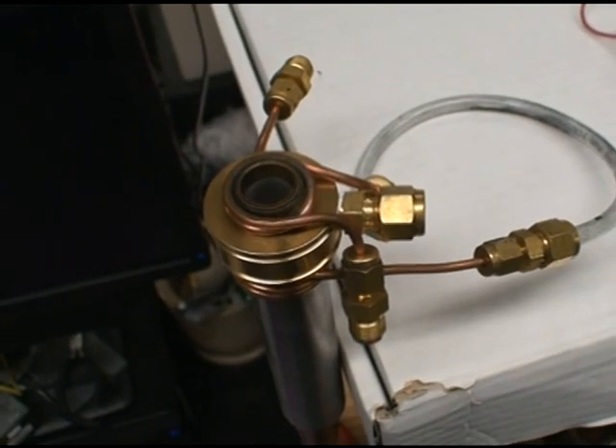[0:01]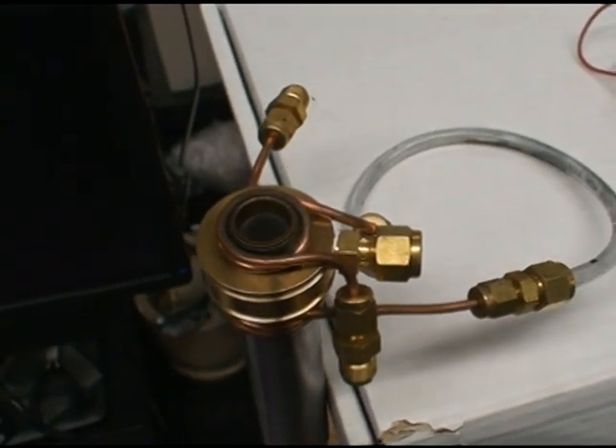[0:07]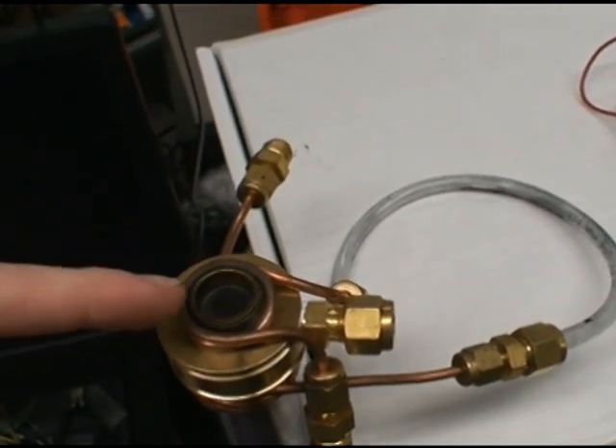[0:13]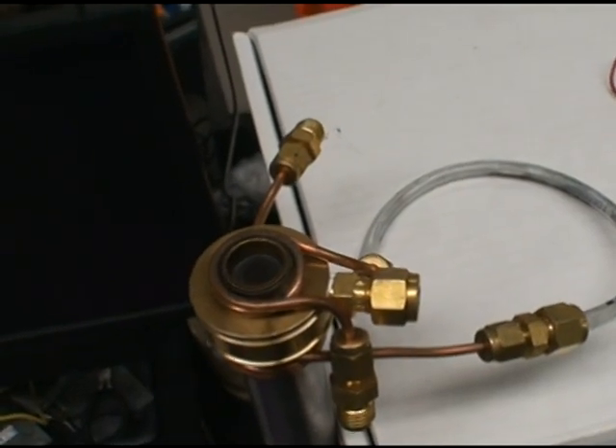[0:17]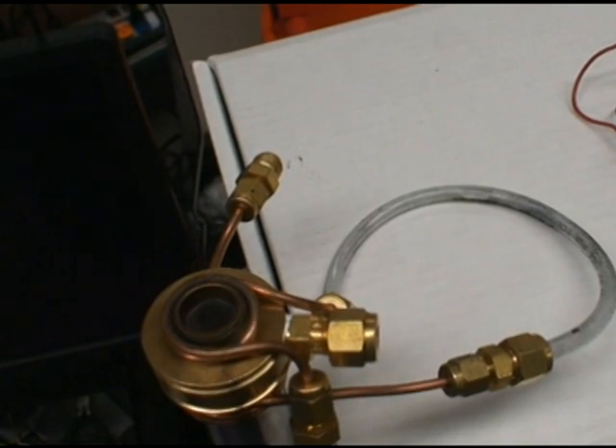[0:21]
Hello everyone. This video is going to discuss how to create an annular pilot, or a ring pilot. The reason you want to do this is to ensure that your central flow does not blow off. Some type of Bunsen burners all contain, or have generally, a ring pilot that is fueled by the main flow line.
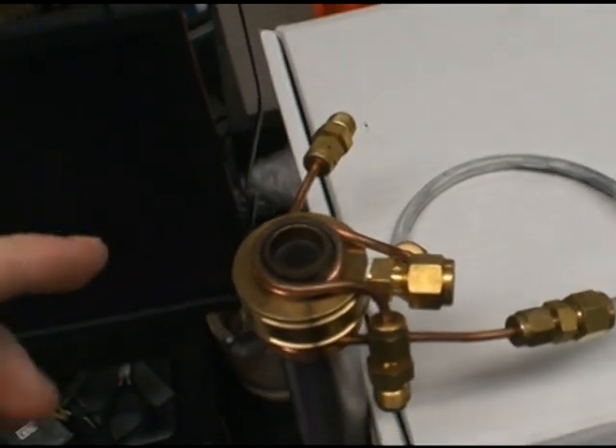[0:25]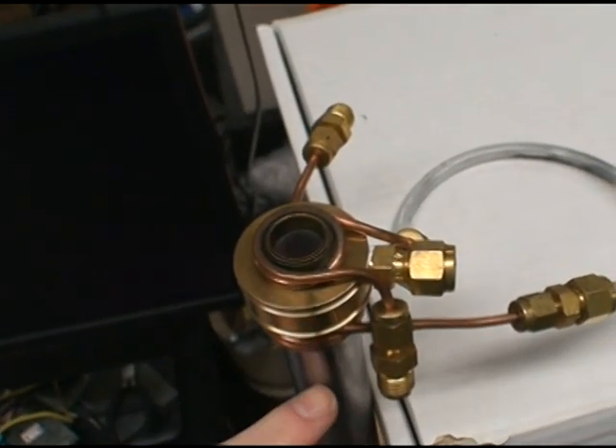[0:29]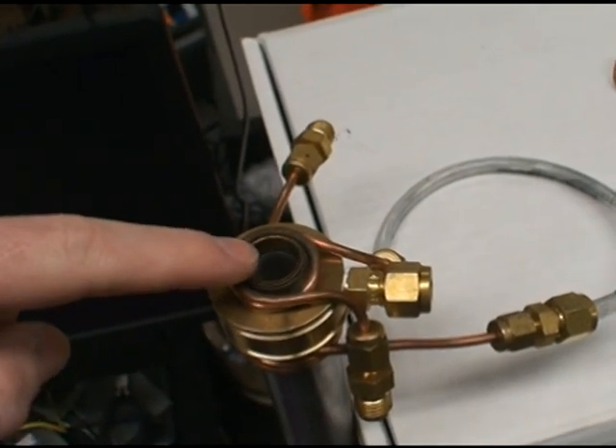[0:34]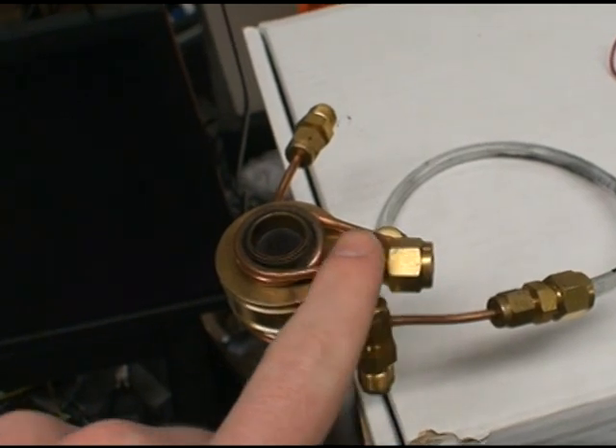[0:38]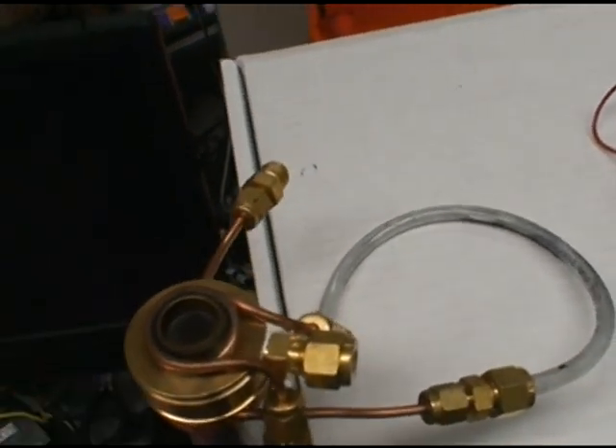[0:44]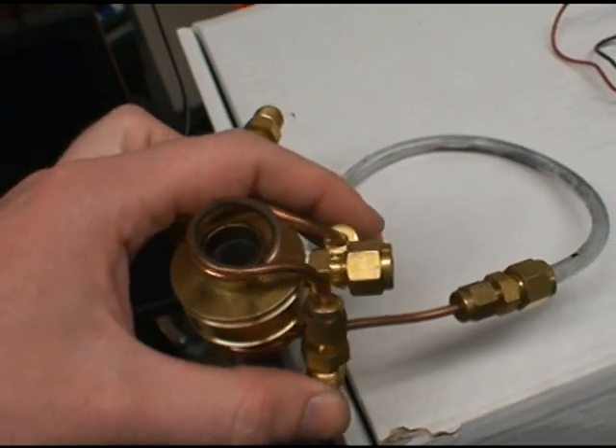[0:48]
But this burner has an annular pilot that is separately fueled from the central line, so you can precisely control the central line burner here and then put in a separate stream of gas here to generate an annular pilot. In this annular pilot, we're actually using a mixture of methane and oxygen, and you can use other things as well. What we have is this is just water cooling.
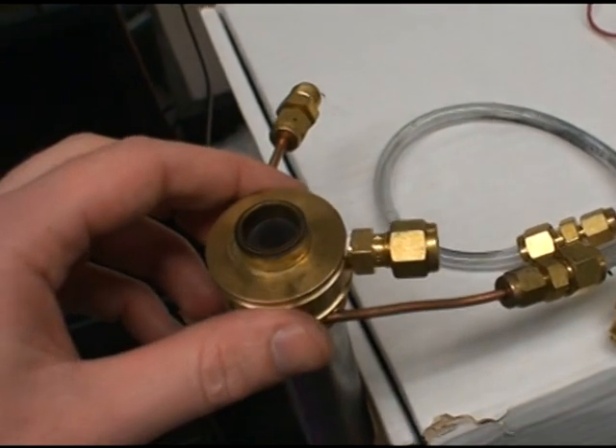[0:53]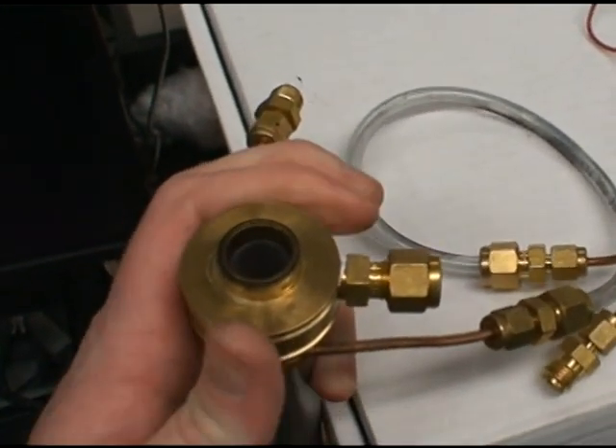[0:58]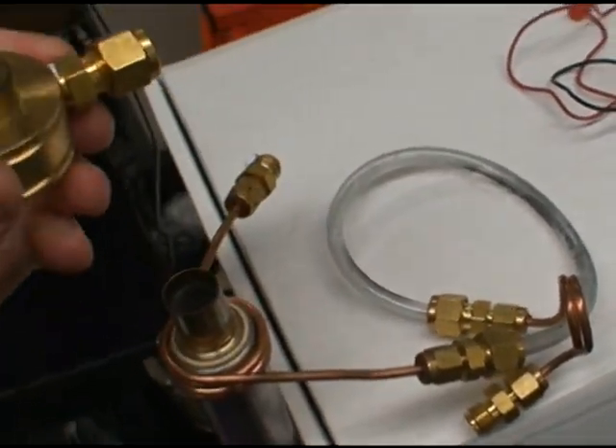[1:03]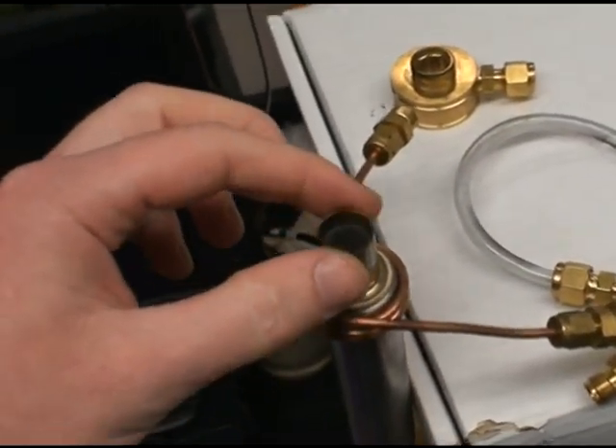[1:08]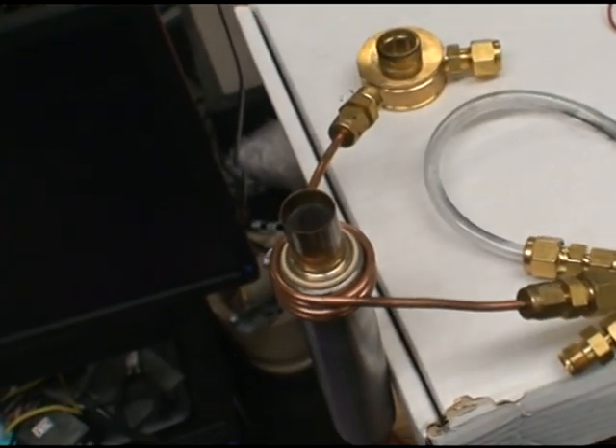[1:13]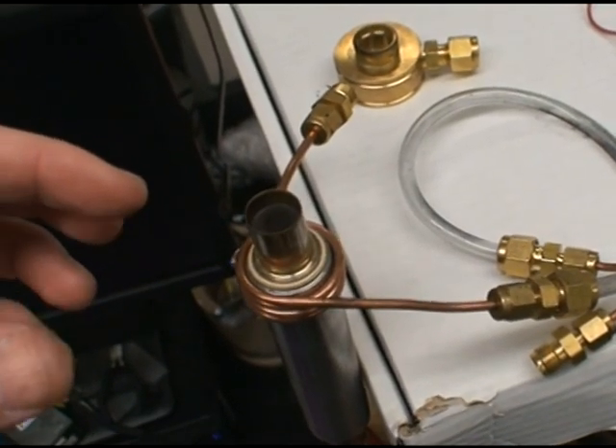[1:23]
Let's see if I can remove that real quick. So we have this insert, or this cap, that comes off. I should have loosened it before I started the video. If we didn't have an annular pilot, we'd have this burner, just a straight tube, which is fine for laminar flames and slightly turbulent flames. But if you want to do high flow rates or high turbulent intensity flames, you need a pilot to anchor the flame on the burner nozzle itself, otherwise the flame will blow off.
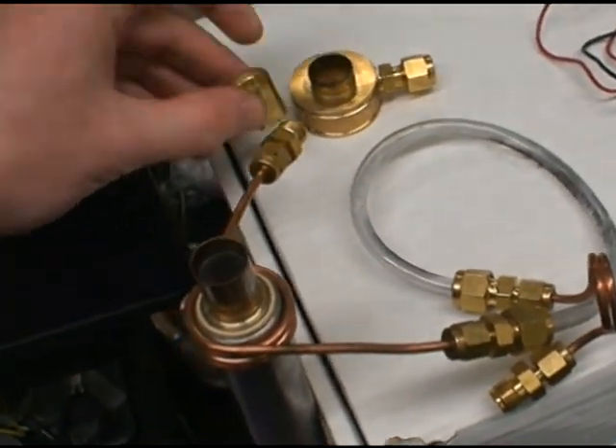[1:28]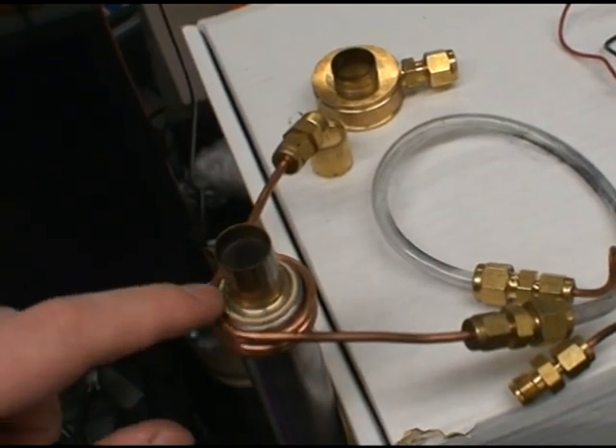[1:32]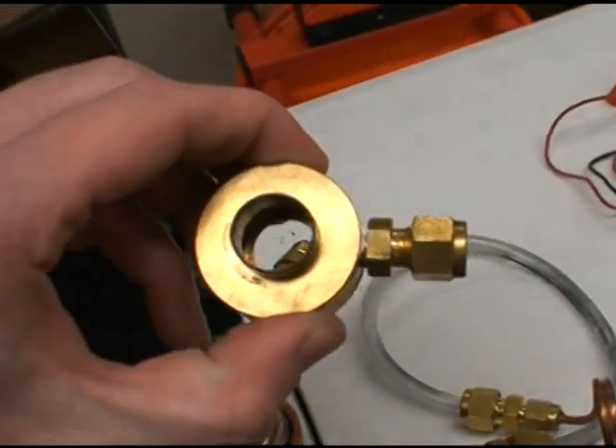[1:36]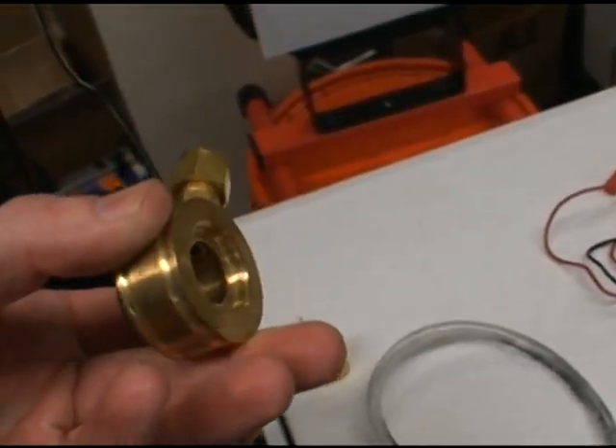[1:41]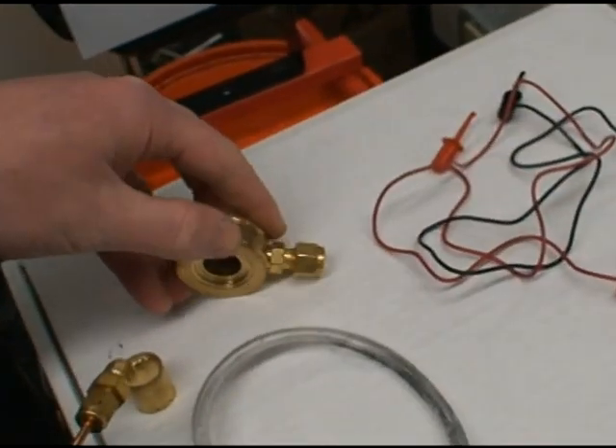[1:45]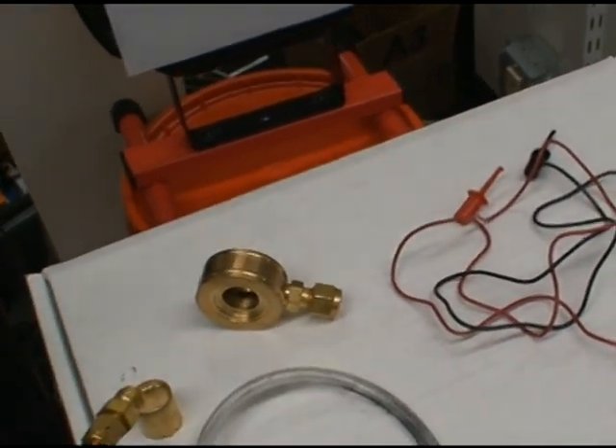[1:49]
So the pilot consists of a number of pieces. We have our main burner, we have a gasket to prevent leakage out the bottom. We have this where we feed the gas. In here there is a slot. I hold this down, it's hard to hold the camera and talk about this at the same time. Wish I had a pointer. I have a pencil, that'll do.
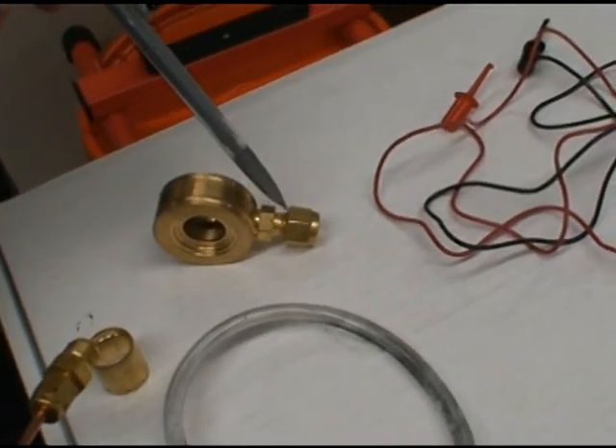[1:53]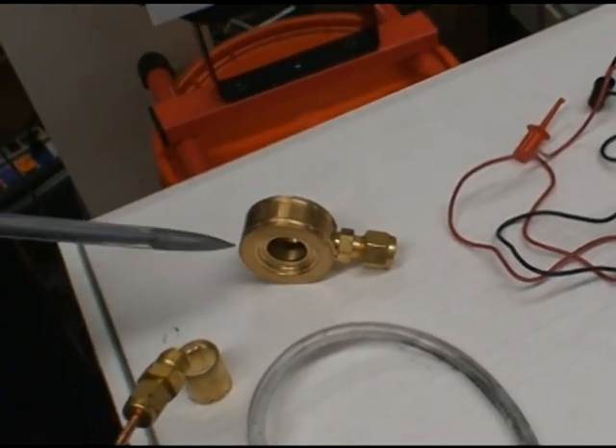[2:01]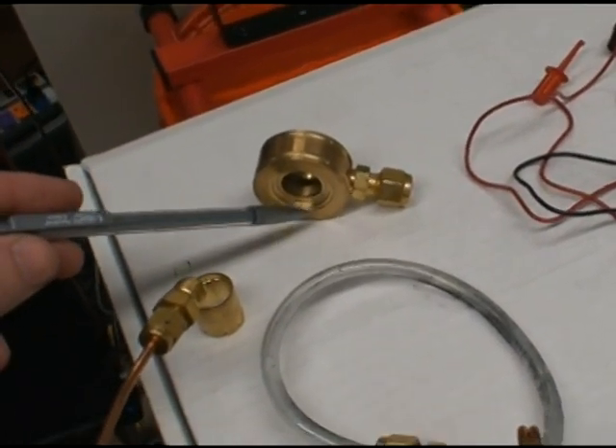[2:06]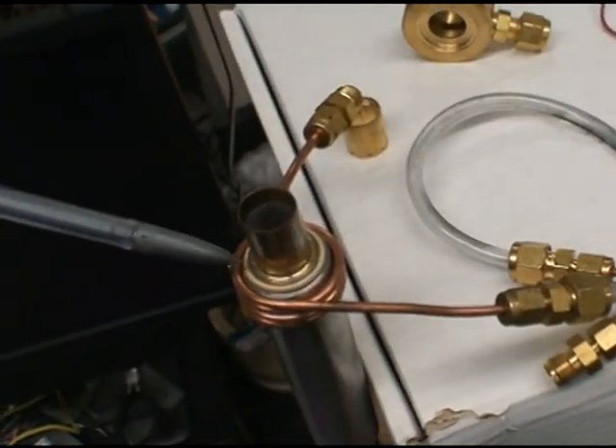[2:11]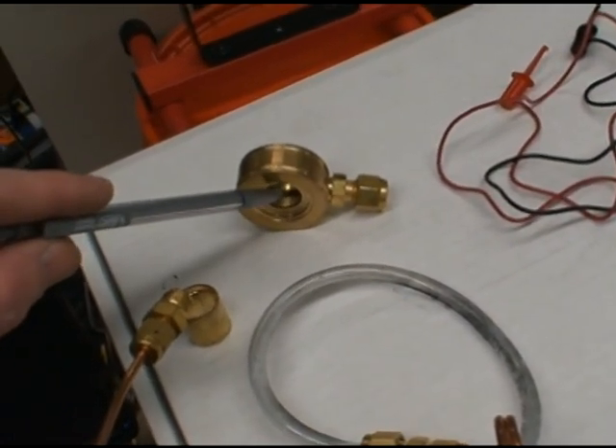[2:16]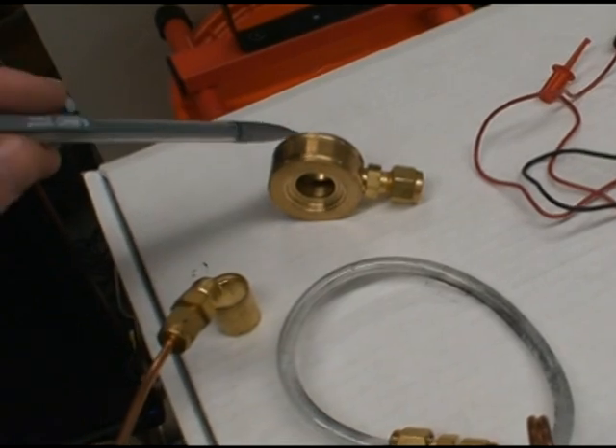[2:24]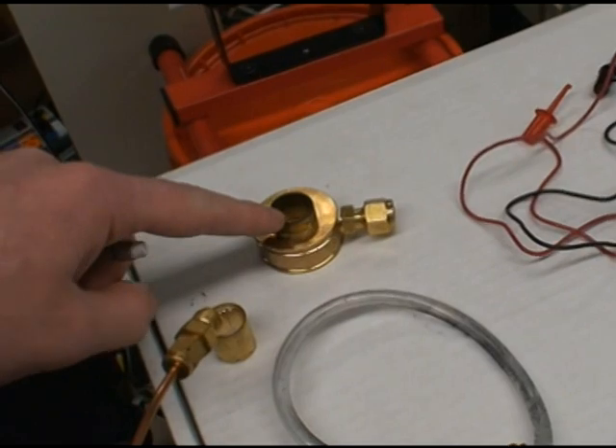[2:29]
So here we have a Swagelok fitting where we input the gas mixture. It's already pre-mixed when we put it in. In this case, you might find it safer to input the mixture not pre-mixed, but here we're going to do it pre-mixed. This is just machined out to fit on the burner and the gasket. And then we have a ring machined out around the circumference so that the gas can distribute evenly around the diameter before it exits at the burner nozzle.
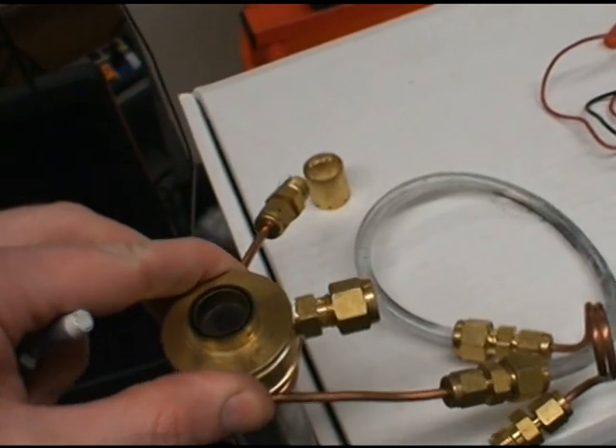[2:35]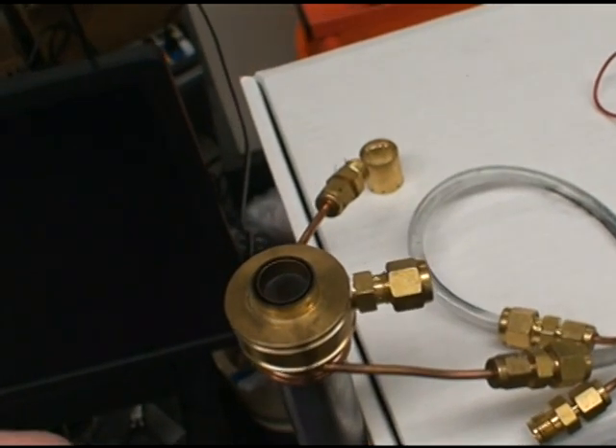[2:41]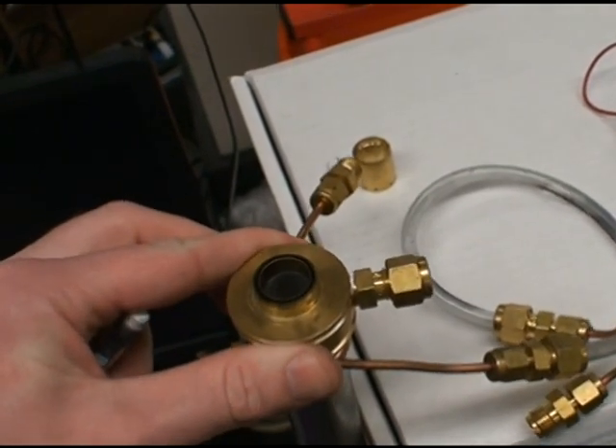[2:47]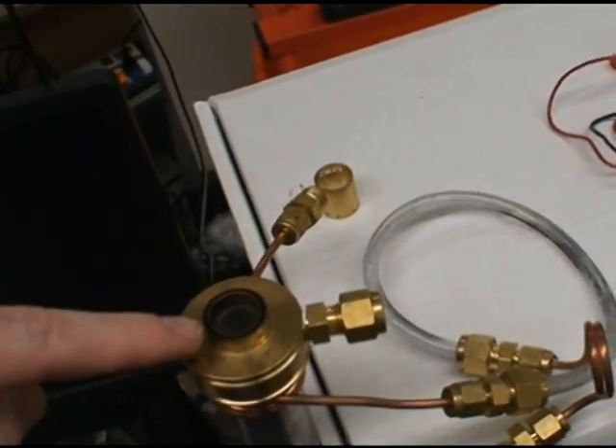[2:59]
Now, you can put this on here just like this and have a relatively stable pilot as long as your turbulent intensity isn't too high. There is some issue with making sure this is actually on square, since it's not a machine-fitted carbon gasket or something like that at the bottom. It's a rubber gasket. There is some tendency for this to get a little crooked, and then you won't have a uniform flame. But you can get a very nice premixed or diffusion flame either way along this ring. And this ring, as it sits here, is 10% of the area. The total area of the pilot is 10% of the total area of the burner.
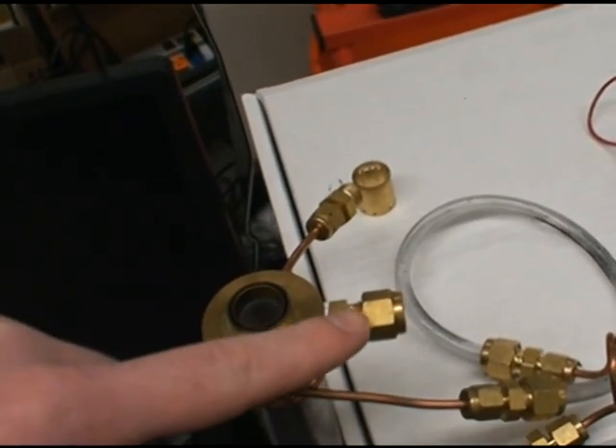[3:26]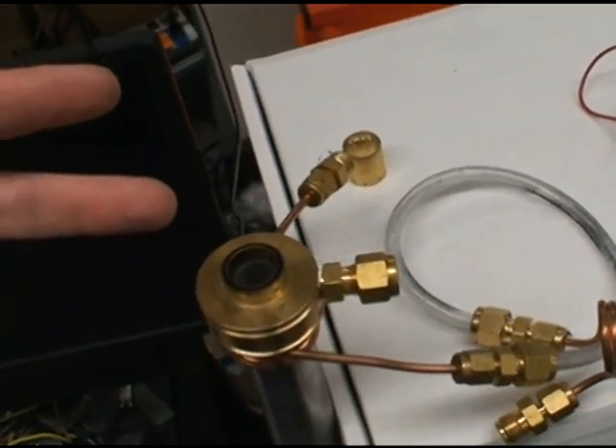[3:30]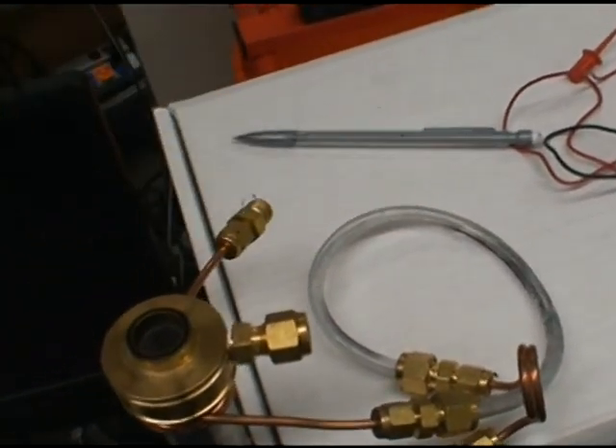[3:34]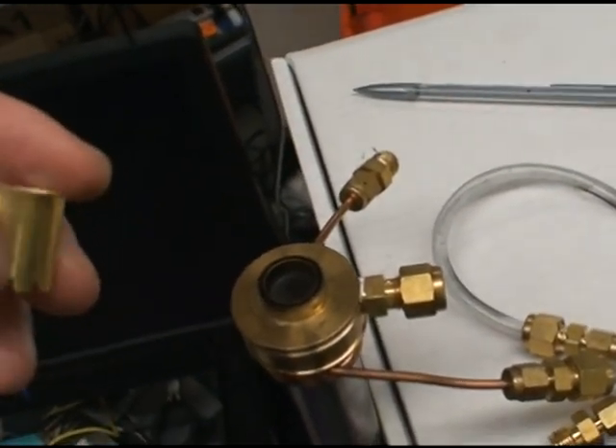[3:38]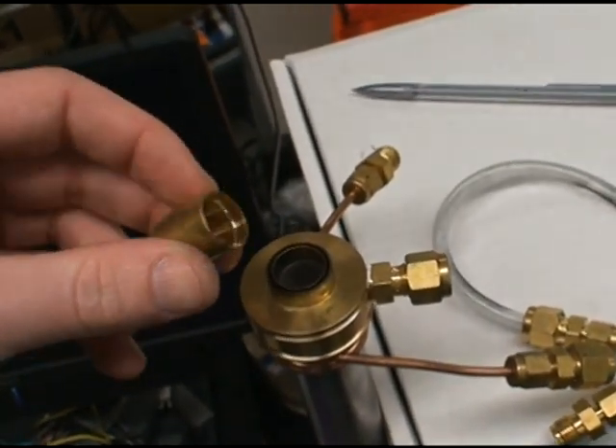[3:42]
Now, when you have high turbulent intensities, this type of pilot will be blown off. This type of pilot here would use a methane and air mixture. So what we wanted to do was make a stronger pilot, so we went to a methane and oxygen mixture. You can read in literature that some people use hydrogen or acetylene or something that burns very quickly, but I'm afraid of using hydrogen, so I'm not using it.
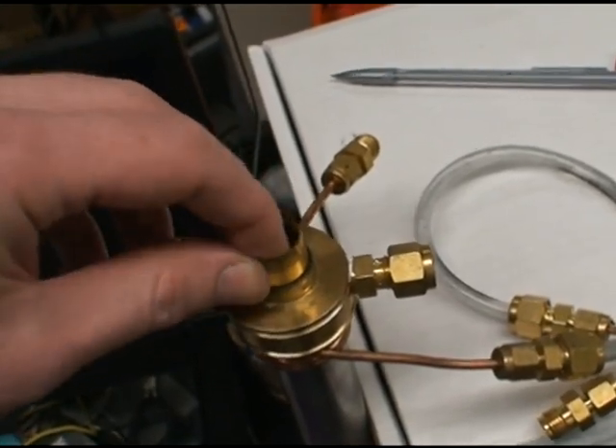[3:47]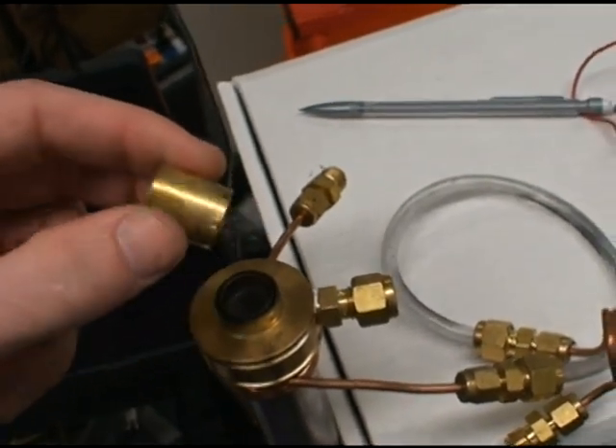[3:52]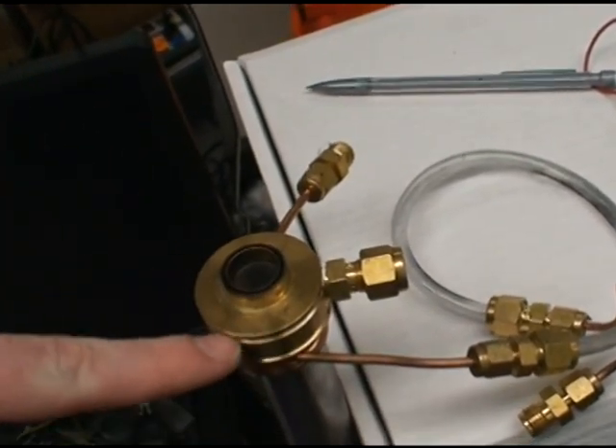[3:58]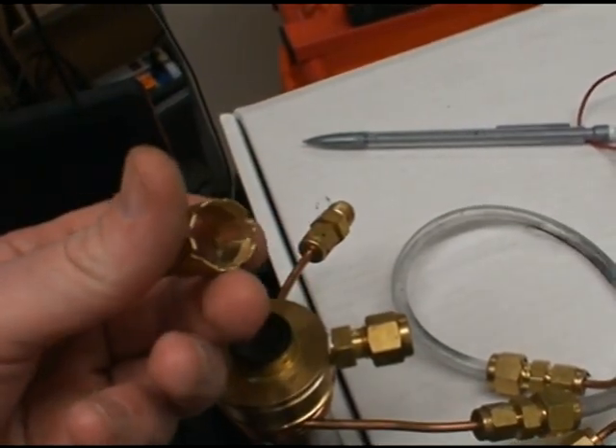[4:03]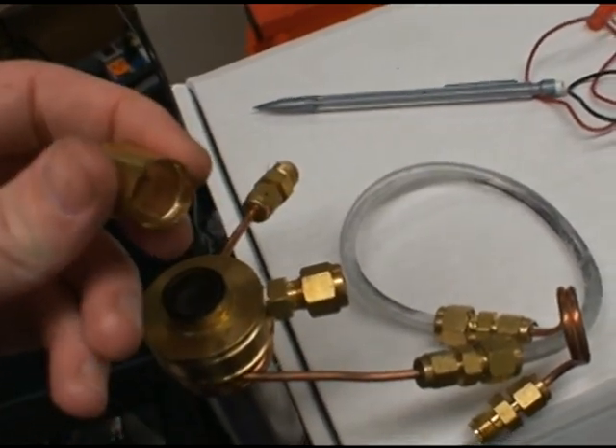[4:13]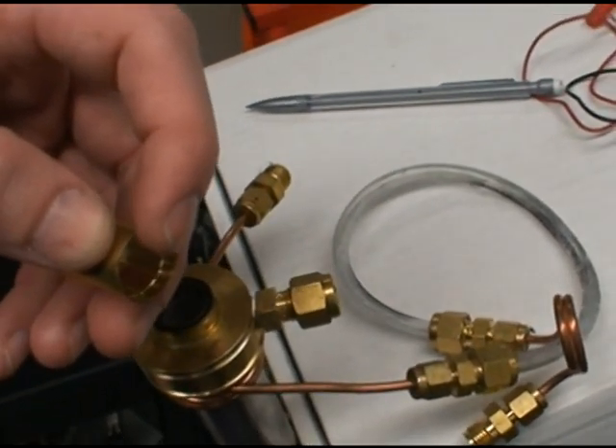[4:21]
So I built an insert. What this insert does is slide down in here and sit flush. I'm not going to move it in flush because I want to be able to move it out. I have slots at the bottom to let the gas that entered into that ring that I pointed out before go in through the slots in the bottom and then travel up along the length of this. I think there are 8 slots around the circumference along the length. Then I mounted this in a lathe and cut, I think it's about 50 thousandths of an inch.
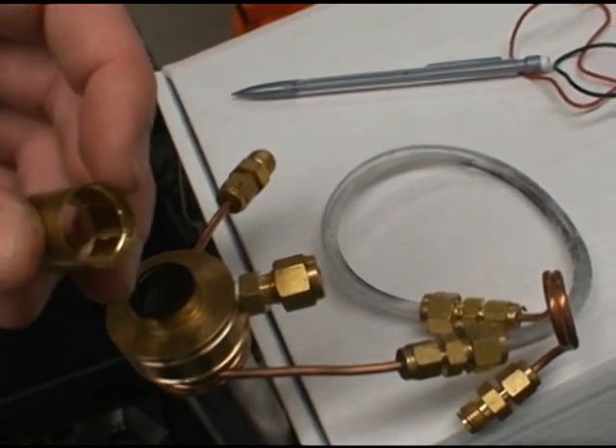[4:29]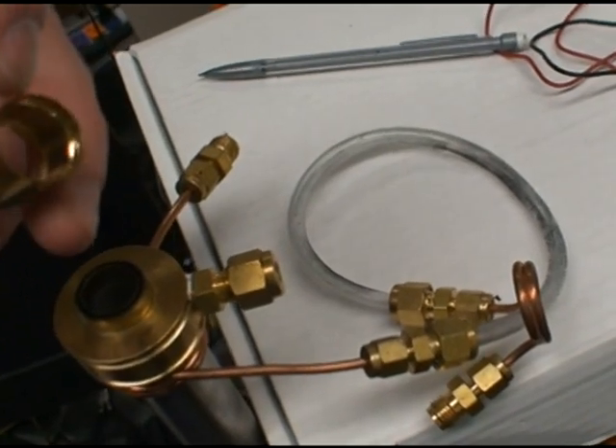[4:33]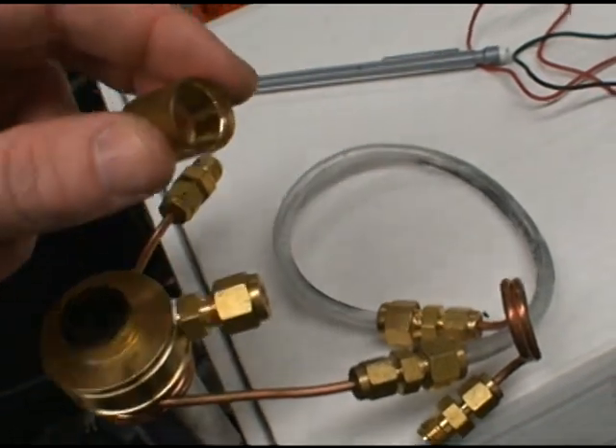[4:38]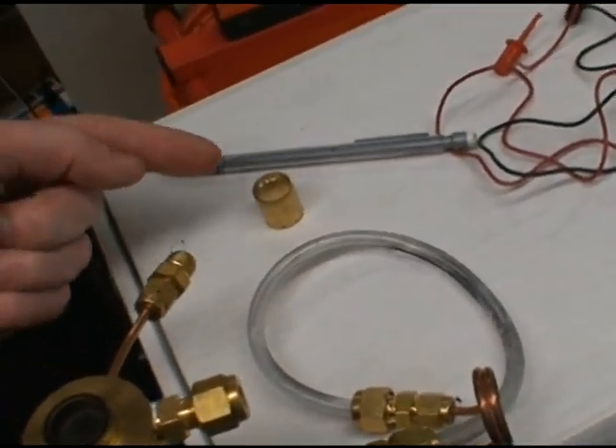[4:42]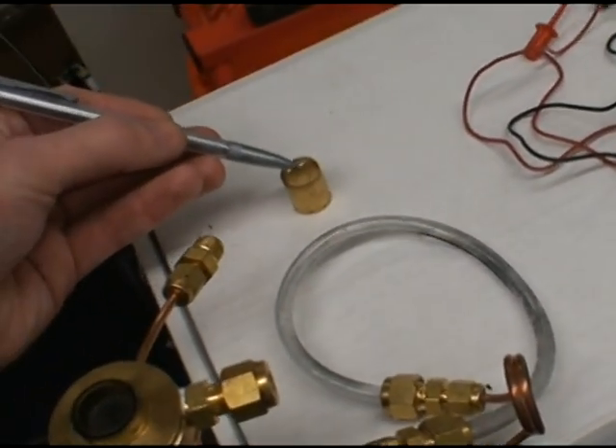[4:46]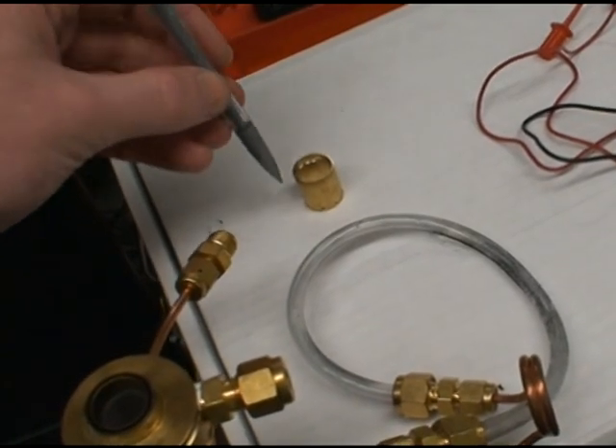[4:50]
I can't remember how much I cut off the circumference here. If I get a chance, I'll grab some calipers and write it in the information below the video. But so I cut. That's too close to focus on. So I cut in this way for about 50 thousandths down the length, and then I cut it in even farther.
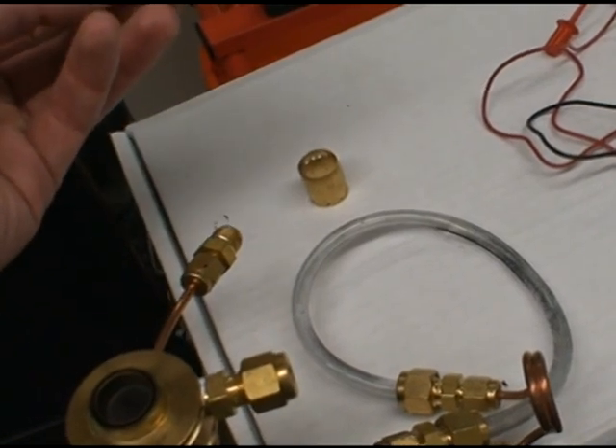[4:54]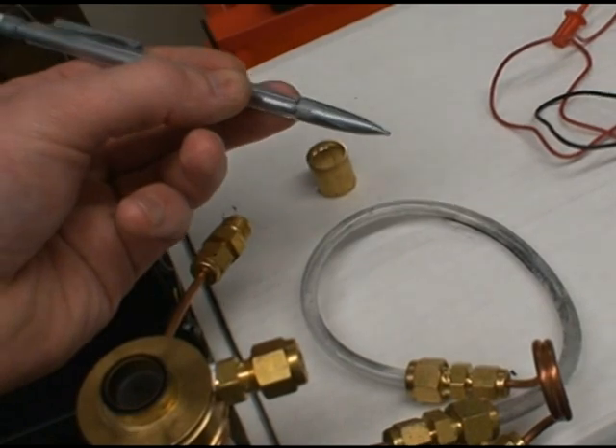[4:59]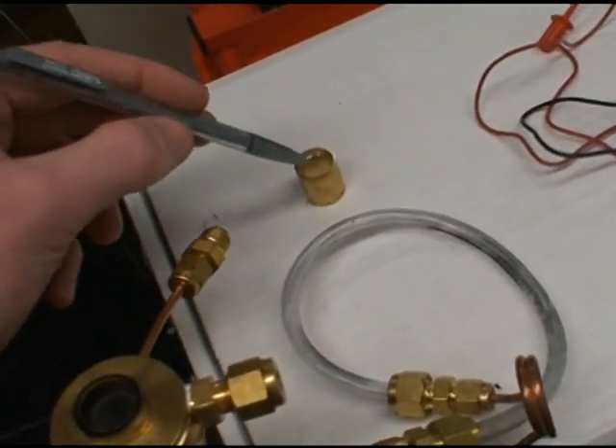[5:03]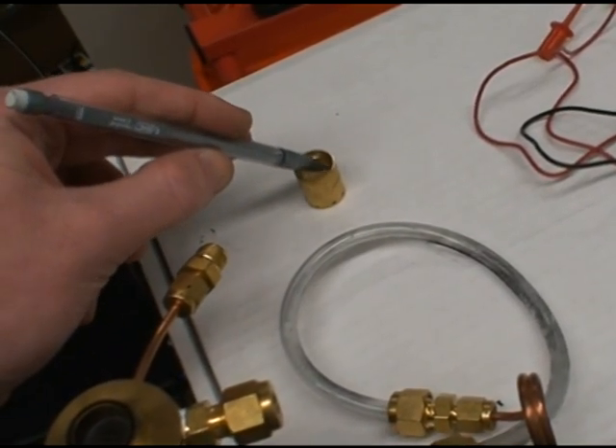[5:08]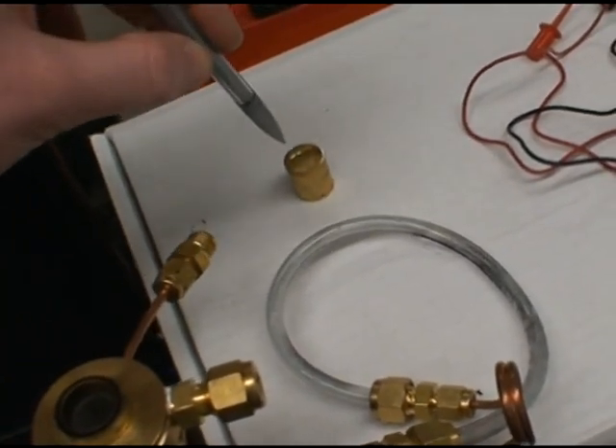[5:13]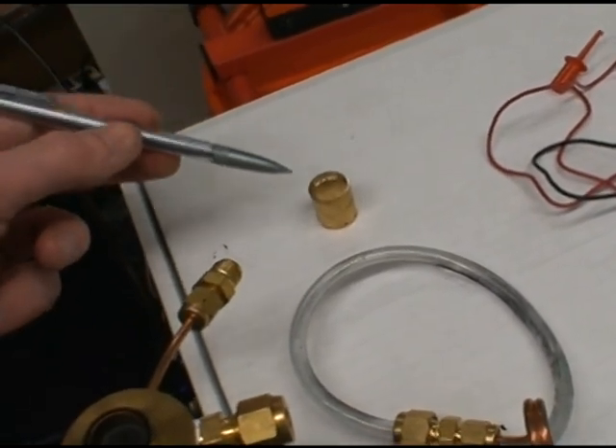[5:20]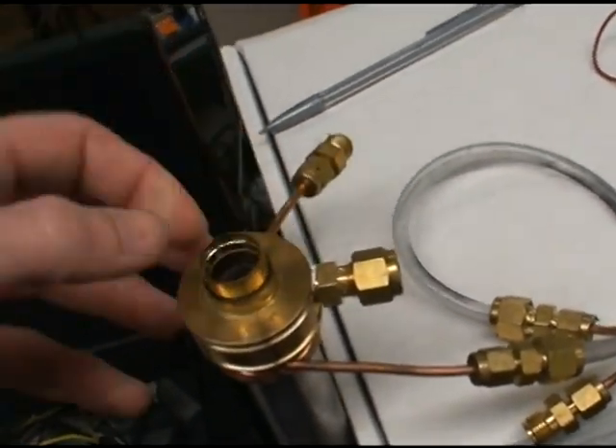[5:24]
So you had a tool in, and then a tool in even more, and down so that there's a second groove here, so that the gas that comes up through these slots along the length hits the first groove and distributes evenly around the circumference, because the drag associated with moving laterally is less than moving out of the very thin nozzle exit. So that was the idea of cutting a non-uniform slot.
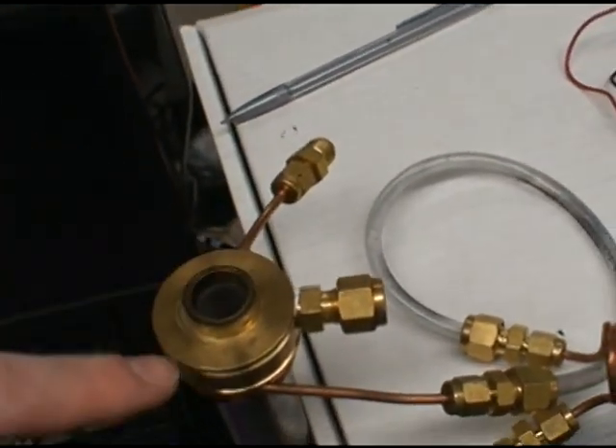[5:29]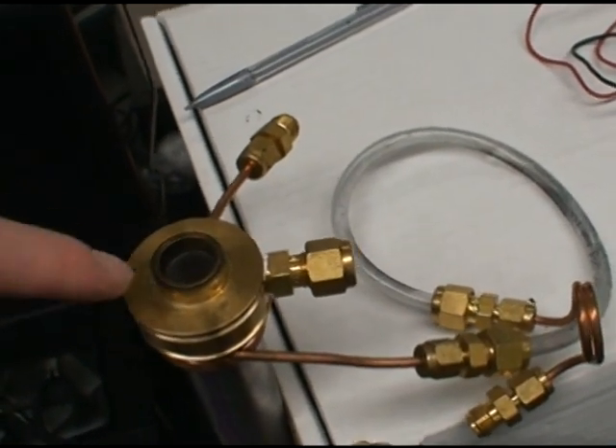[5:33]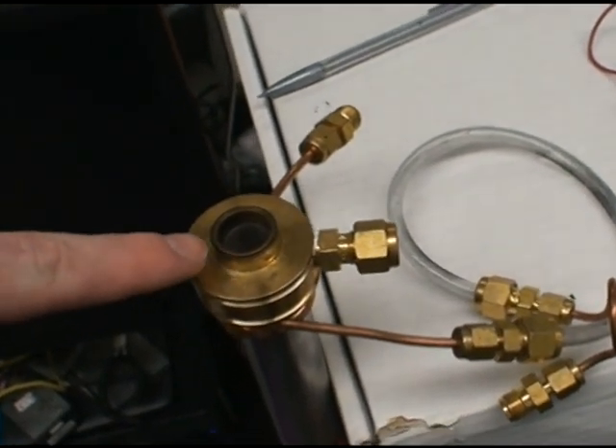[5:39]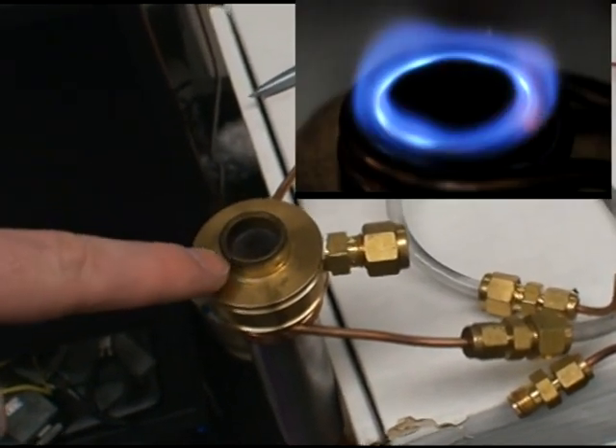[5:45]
So then we have this very, very thin annular slot, which we're going to force high-speed methane and oxygen out of, and get quite a nice uniform high-temperature ring around the main burner. So I'll add a video of this in action to the end of this, because it's not installed currently.
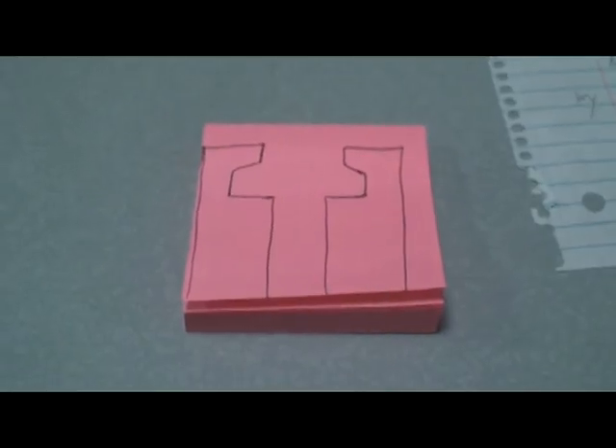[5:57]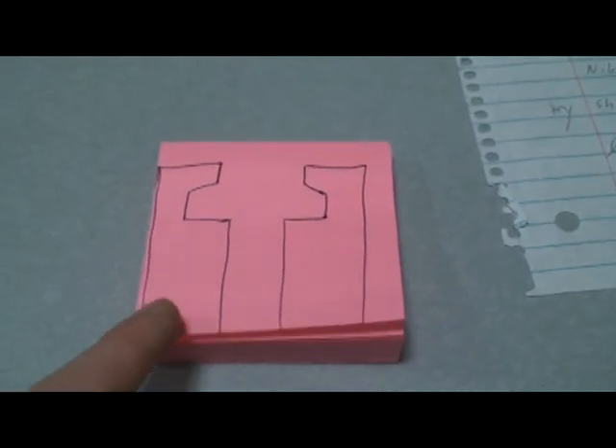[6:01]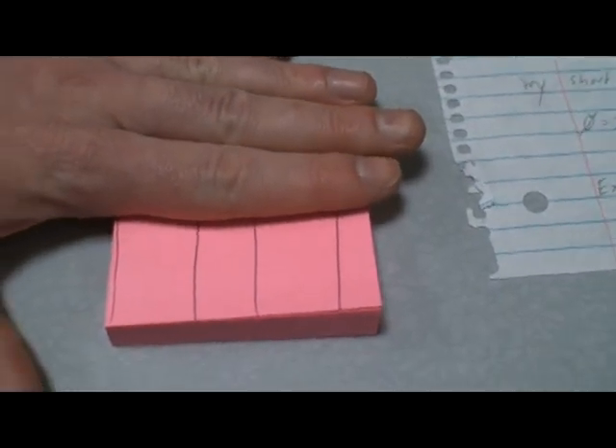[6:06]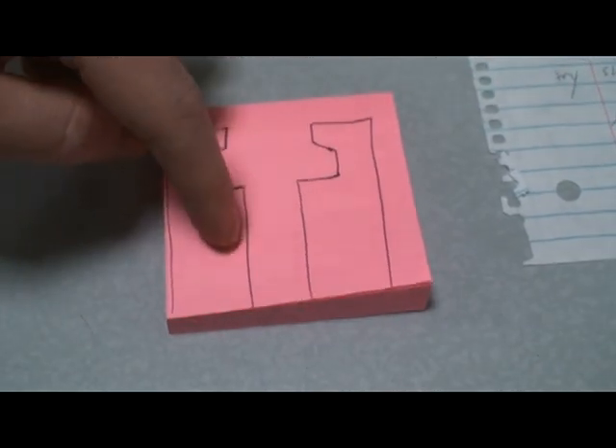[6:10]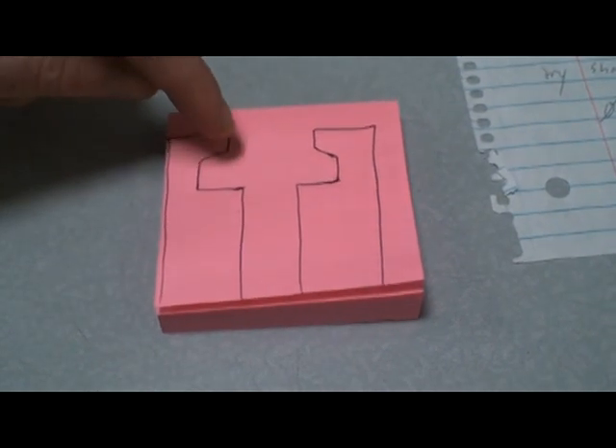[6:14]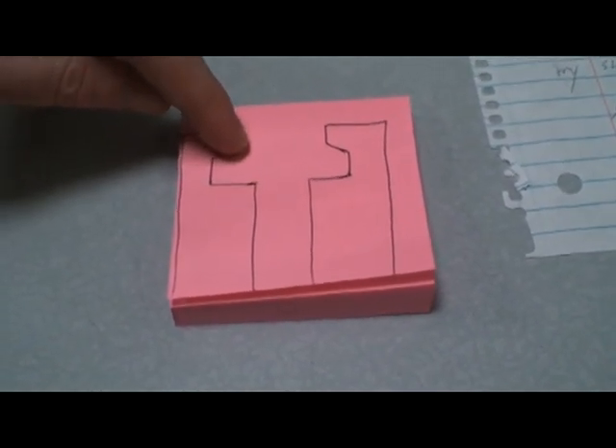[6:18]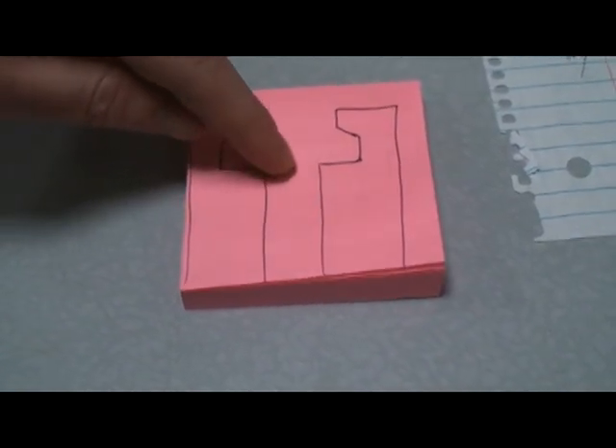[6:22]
Just to clarify the insert that I made, so if this is the tube, the main tube, and we had it just like this, this would be the outside wall, this would be the inside wall, another inside wall, outside wall. We line it up in a lathe, and then we cut off a bit of material, and then we cut in deeper, remove even more material, and then remove the tool.
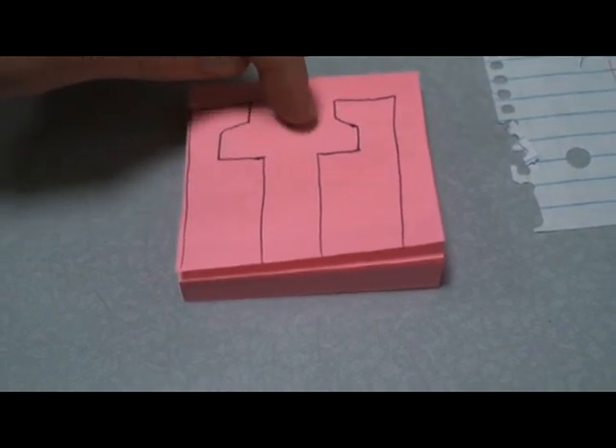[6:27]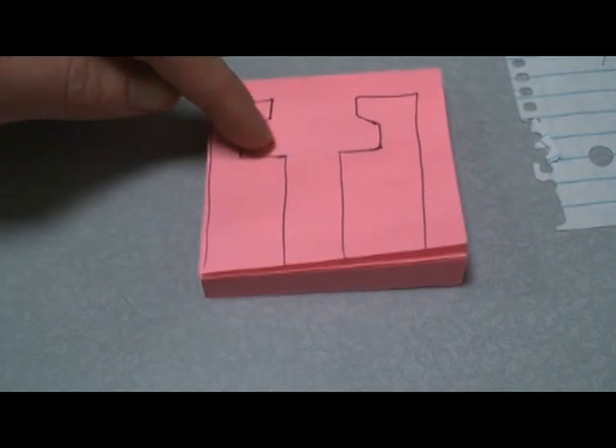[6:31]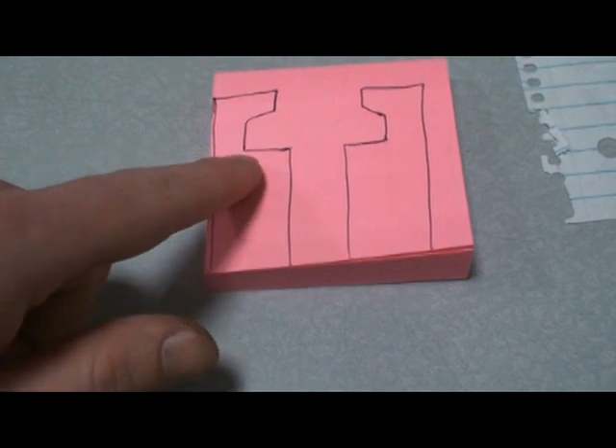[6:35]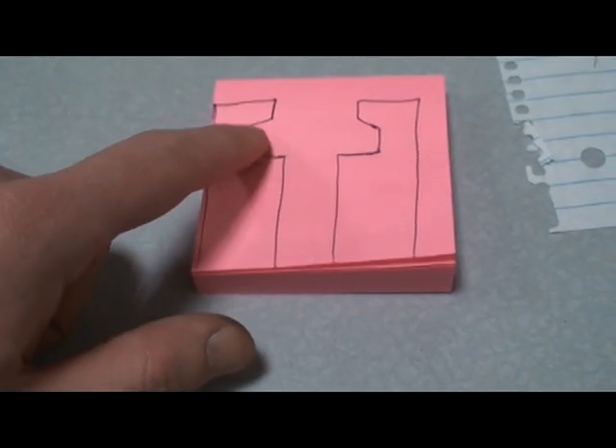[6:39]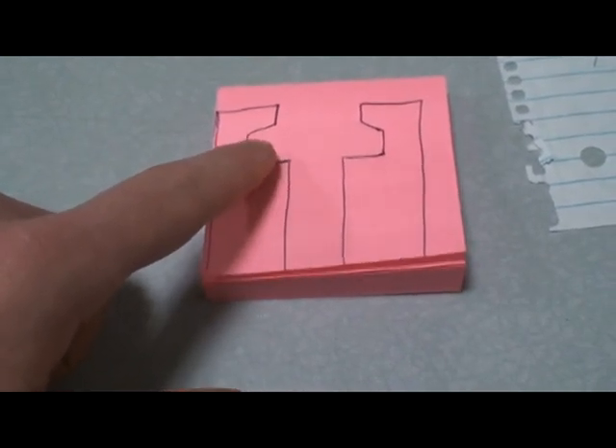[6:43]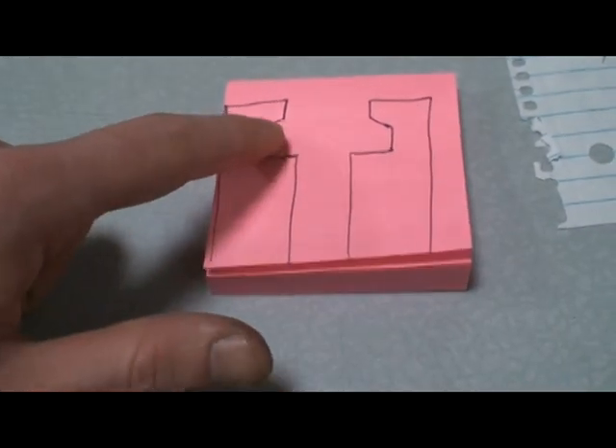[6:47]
So we have an open diameter at the top, a larger slot below that, and then the normal tube below. So we had to remove a lot of material, but not enough to cut through the wall, and then less material at the actual tip, so that the pilot gas distributes evenly around the circumference of this slot and then comes out uniformly at the burner nozzle.
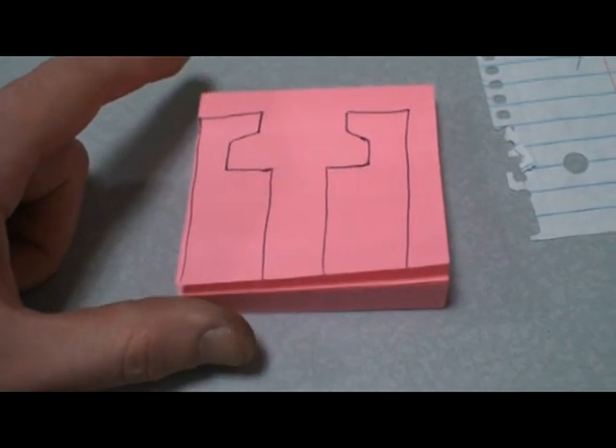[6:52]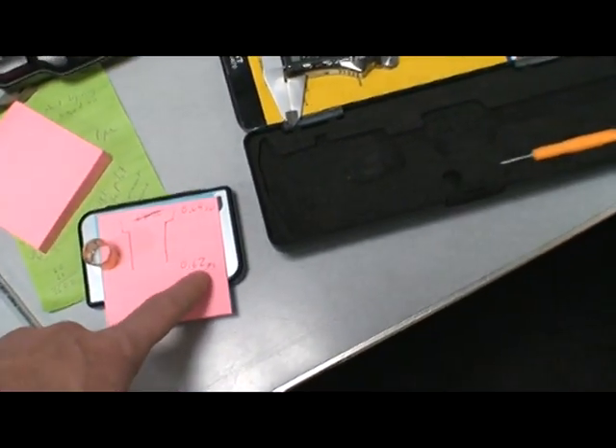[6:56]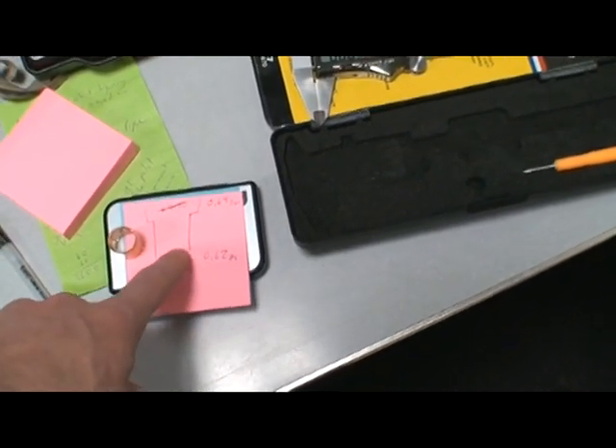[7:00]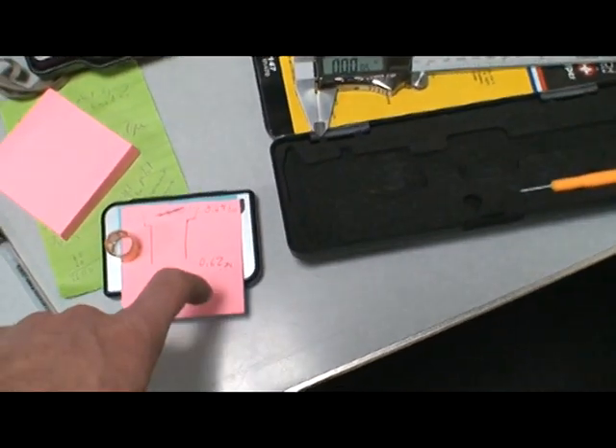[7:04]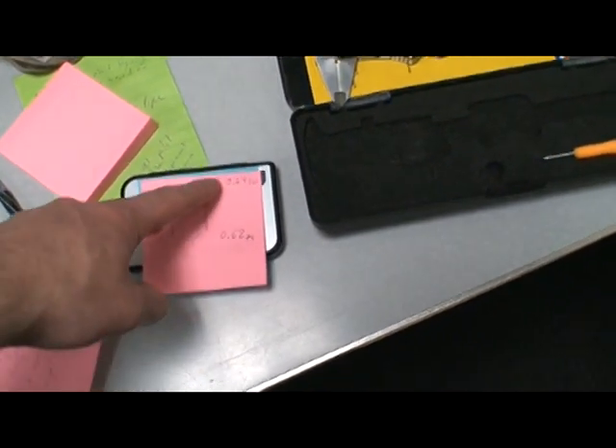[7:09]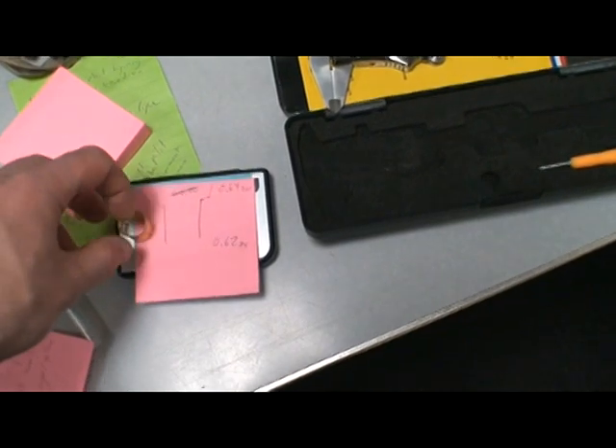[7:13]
Hello again. So I measured this with the caliper. It's 62.75 thousandths of an inch on the nominal inside diameter, and 64.20 on the lathe part. So if you subtract this number from that number, then you can know what the removed material is.
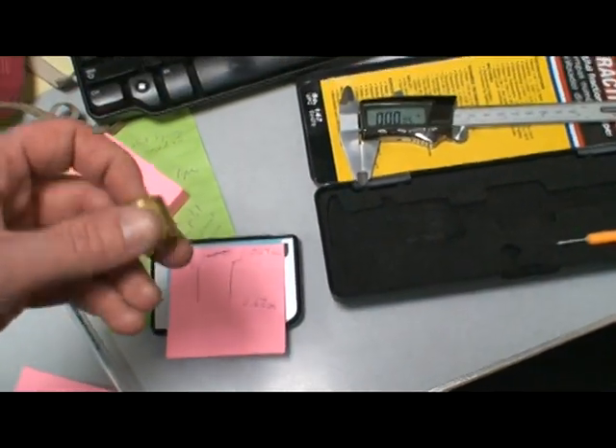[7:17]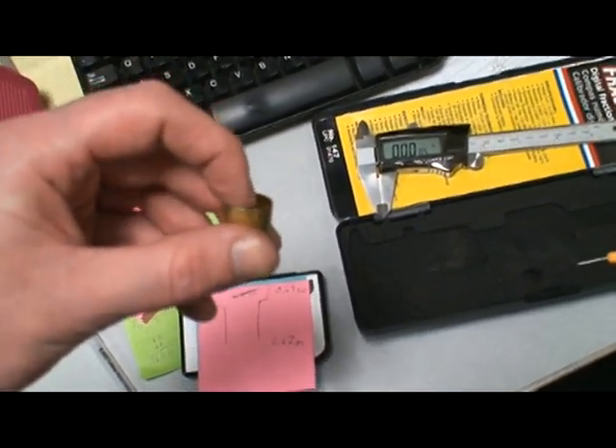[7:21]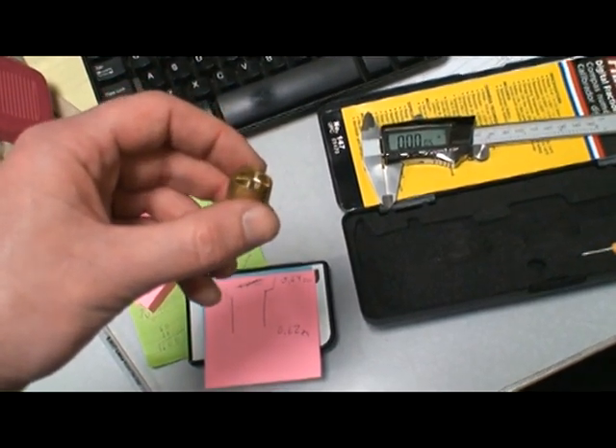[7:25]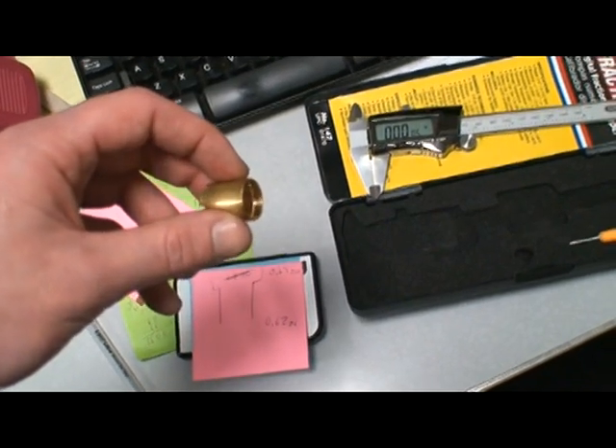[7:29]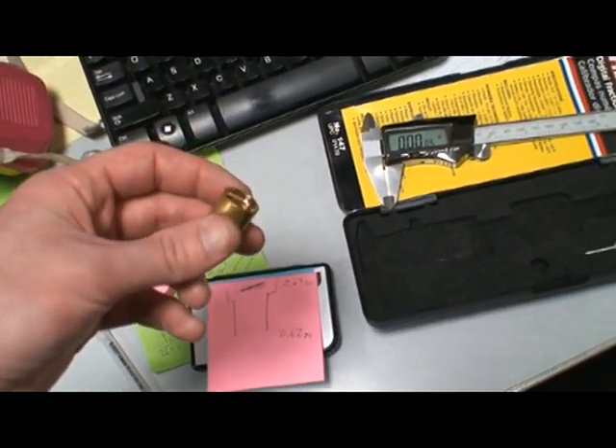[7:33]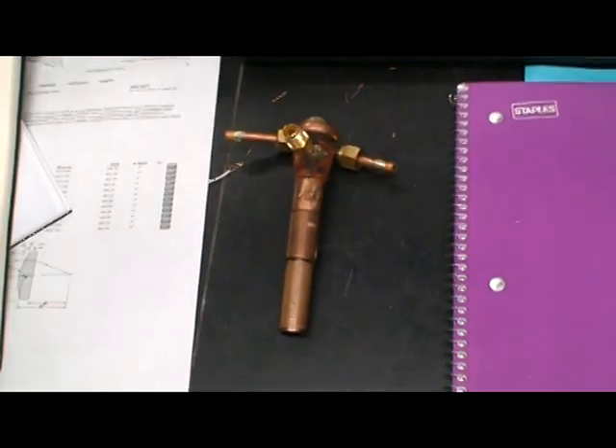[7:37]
Now, I'm not sure exactly how much I removed on the second groove in here, because I did it by hand and couldn't get the automation on the lathe to work. I'm not quite an exceptional machinist, so I did it as best I could. This is my fourth try, and it seems to work pretty good. Now, you can build a pilot without any machining at all. It's not nearly as pretty.
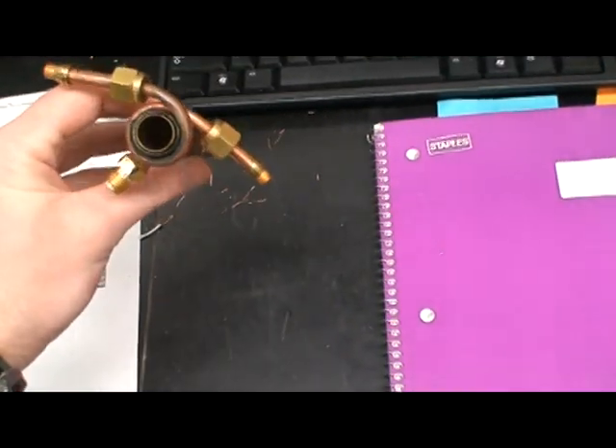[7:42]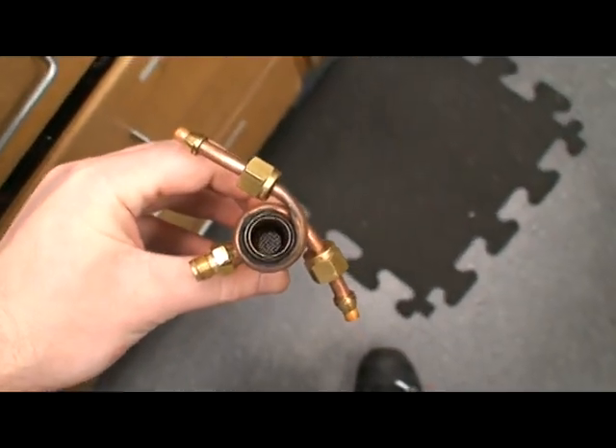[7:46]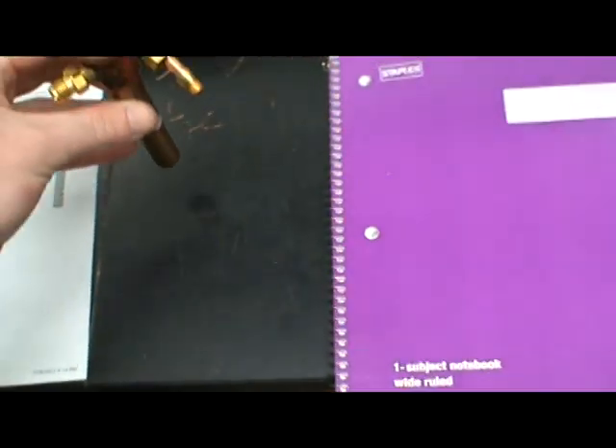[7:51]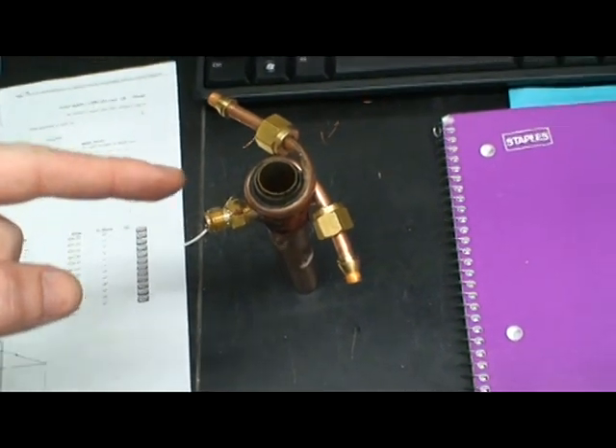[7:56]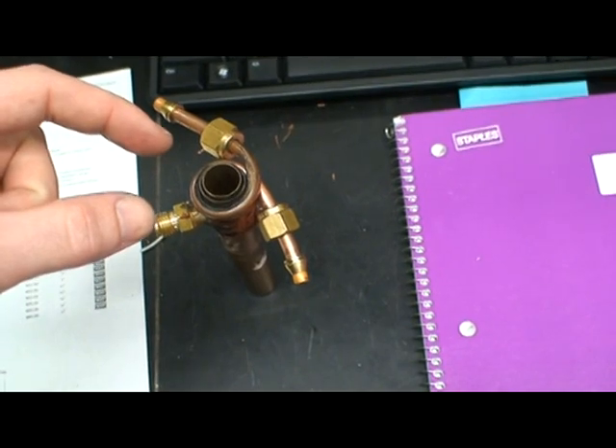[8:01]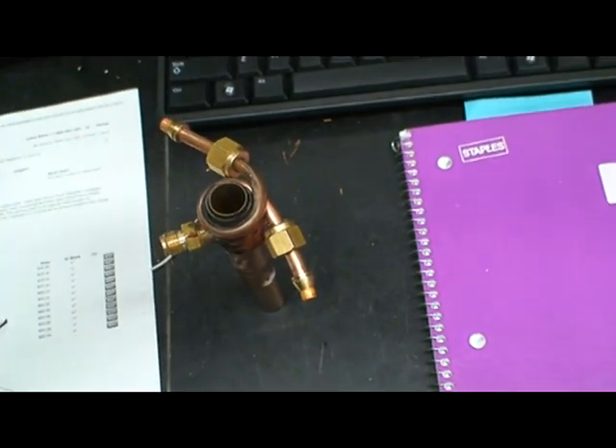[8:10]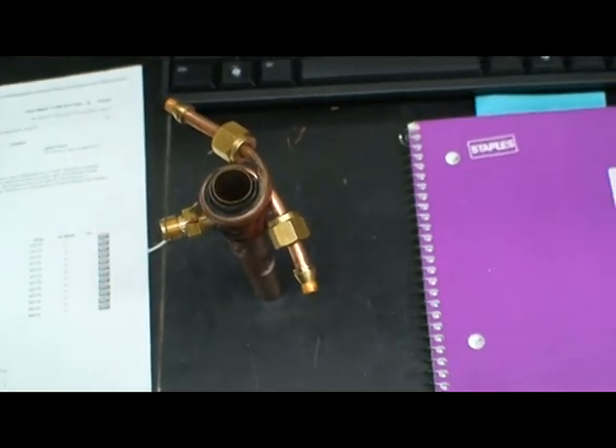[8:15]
So in this instance, you can see a couple of things. One, there's a perforated plate down in the tube, so that's what's generating the turbulence in the burner. If this stands up by itself, you have the input gas here, three concentric tubes. These tubes are from smallparts.com. It's prototyping tubing. So they fit in each other like an old style antenna that you can move up and down, or a pointer that you can extend.
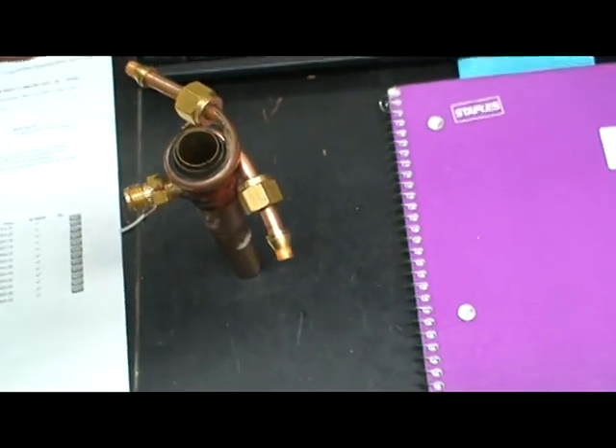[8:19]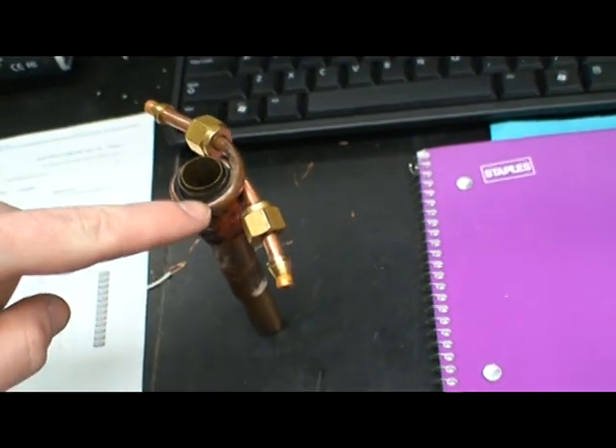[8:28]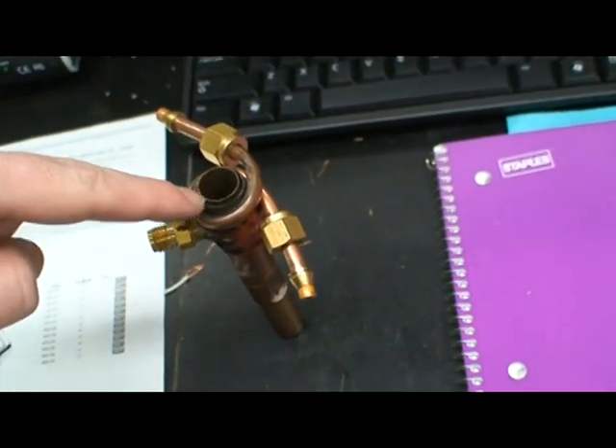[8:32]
So you have a central tube, which is the main burner. You have an alignment tube that slides just around the outside diameter of this, and then the third tube is the actual outside of the pilot. So this tubing is just water cooling that runs around the nozzle.
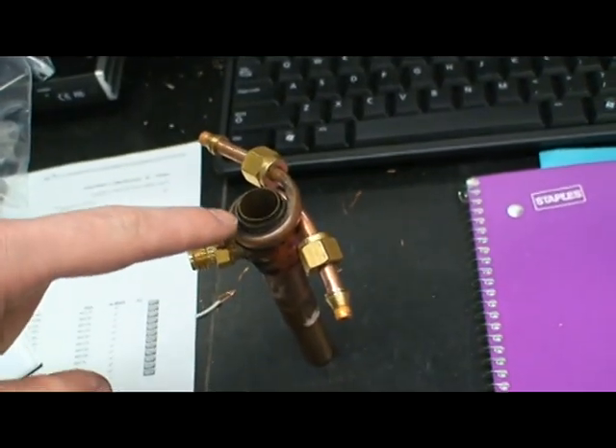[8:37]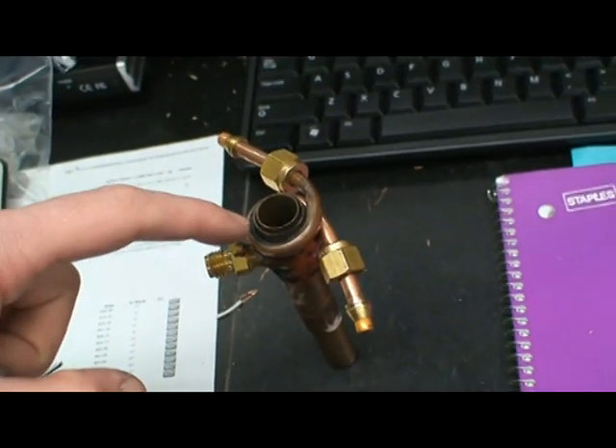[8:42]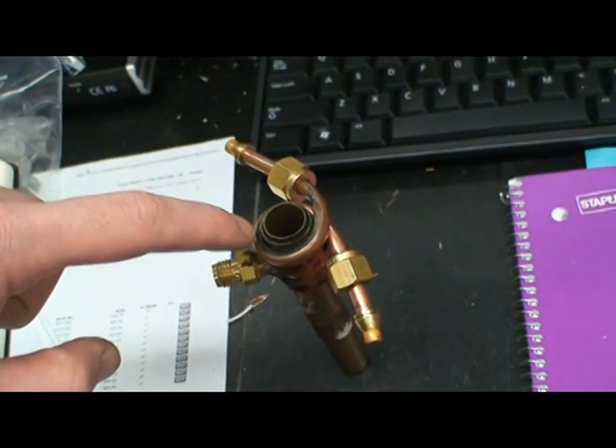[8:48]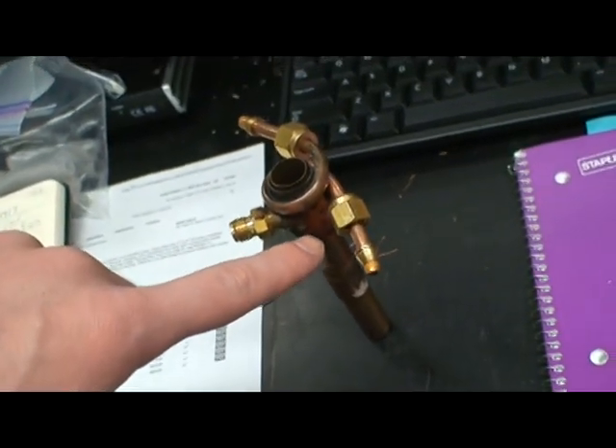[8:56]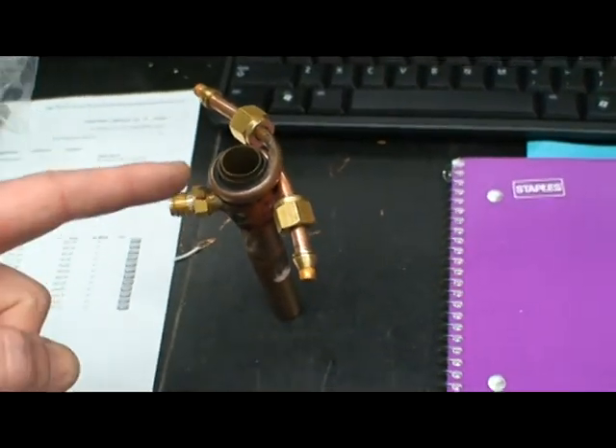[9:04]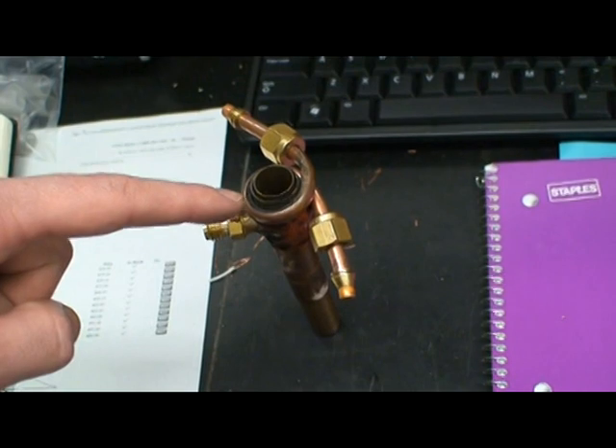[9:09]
And so you have to cut a hole in the side of the third tube and insert a fitting in the, I think it's 0.018 inch separation distance between the first tube and the third tube, or that's the thickness of the second tube, and glue it in place. I used epoxy and a high temperature gasket used to make head gaskets on motors, and then you can fit it in this way. So this was the first attempt to make sure this type of pilot would work, and actually it was used in the first set of experimental data that was taken.